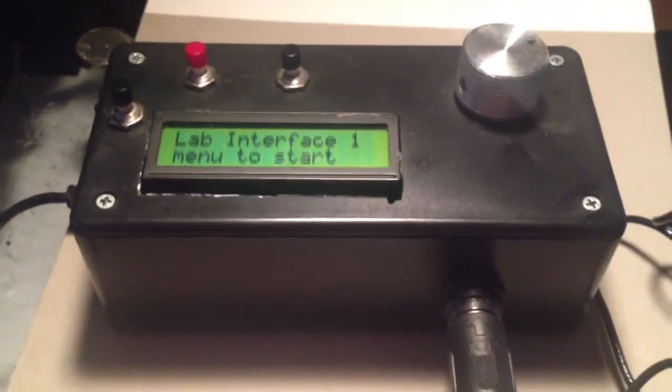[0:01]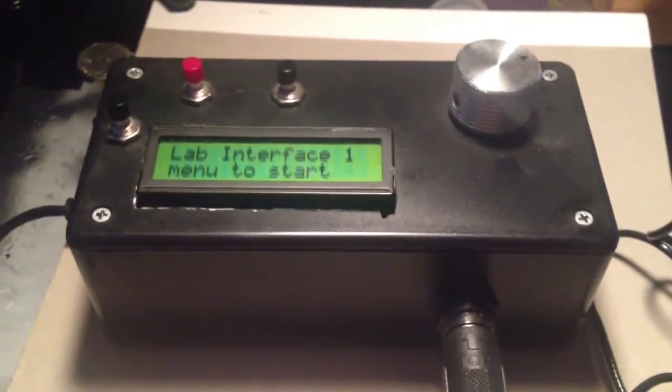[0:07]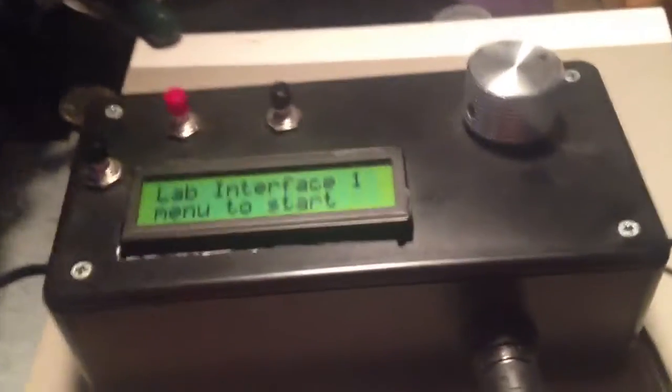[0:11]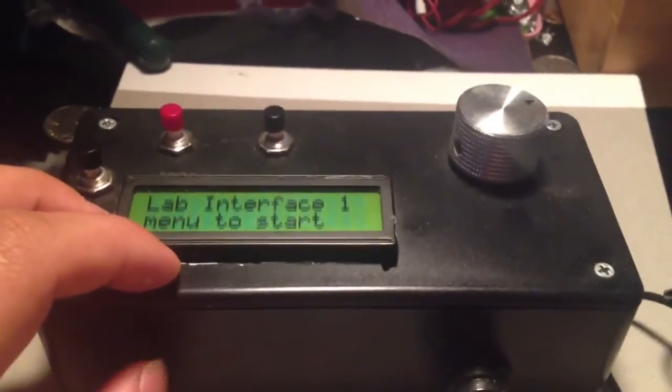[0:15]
So this is an Arduino pH meter that I made. It measures pH and can use other probes like EKGs, electrocardiograms. And so that's why I'm calling it a lab interface. Well, anyway, it's set up with two-point calibration for pH right now.
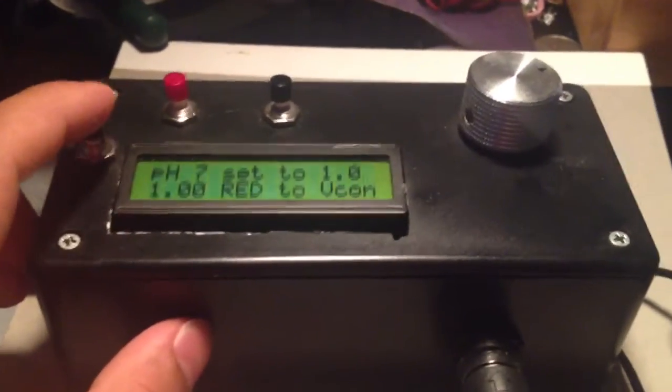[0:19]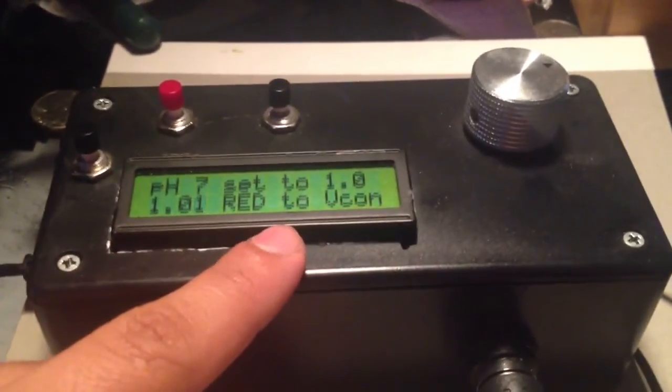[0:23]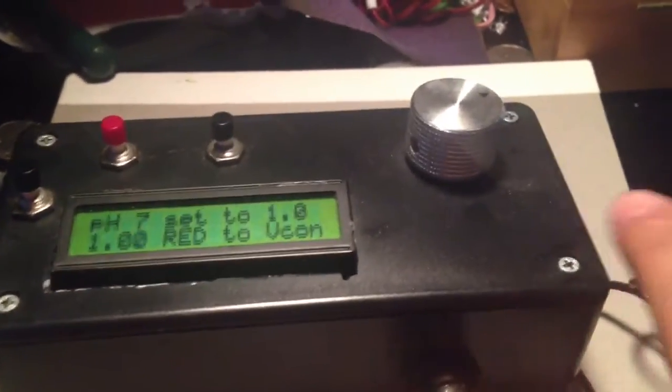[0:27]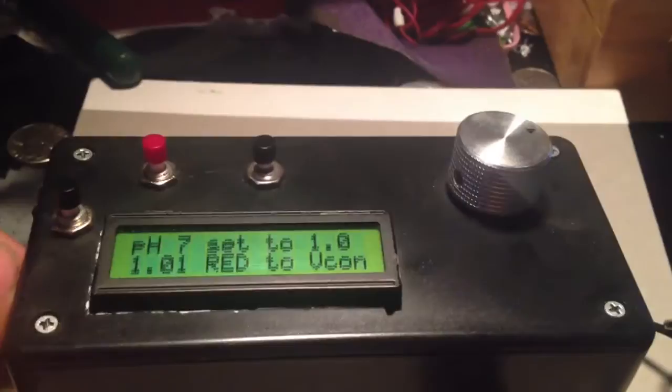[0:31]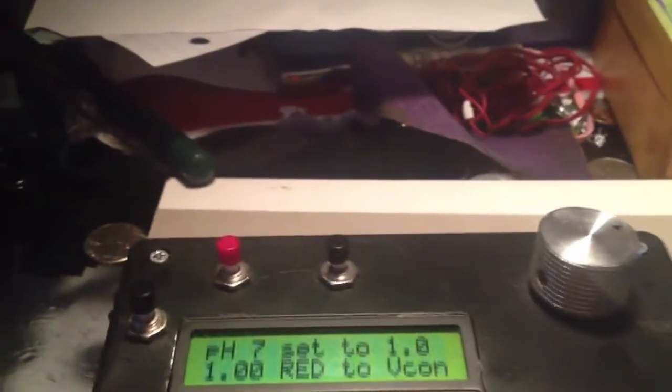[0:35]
So basically what happens is I press this button to enter calibration mode. Now it says pH 7 set to 1.0. You'll notice this number is fluctuating. I've already set it to 1. Right now the probe is in a storage solution. So that will take a reading so that you have a reference, because pH 7 is set to 1. It's just an arbitrary voltage.
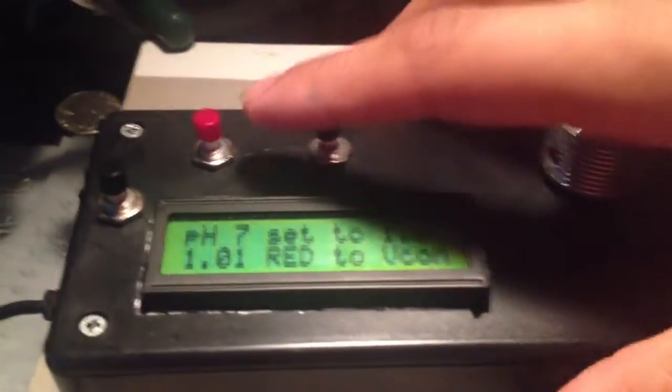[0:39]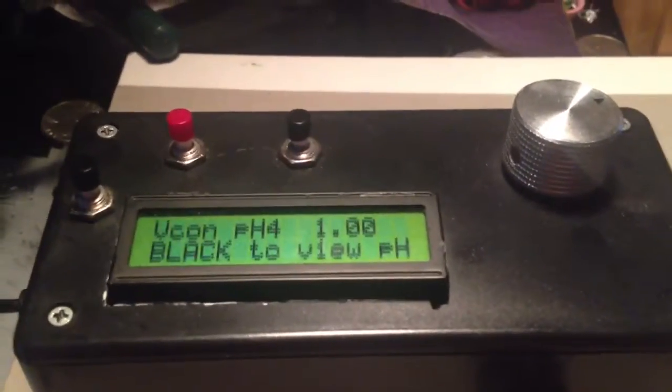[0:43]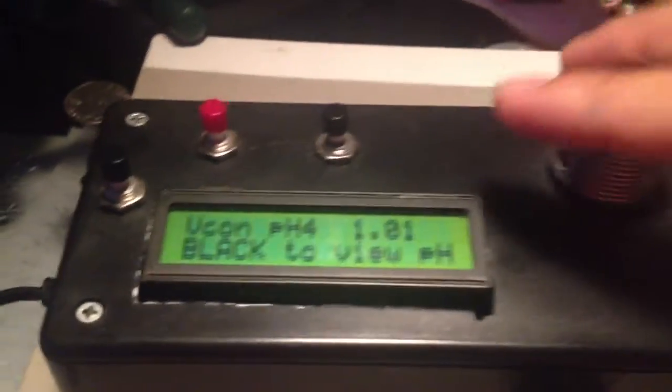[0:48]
Then press the red button, and what that does is you put it in a pH 4 solution, a buffer, and you wait for that number to stabilize. Once that's stable, you can press this black one to view the pH.
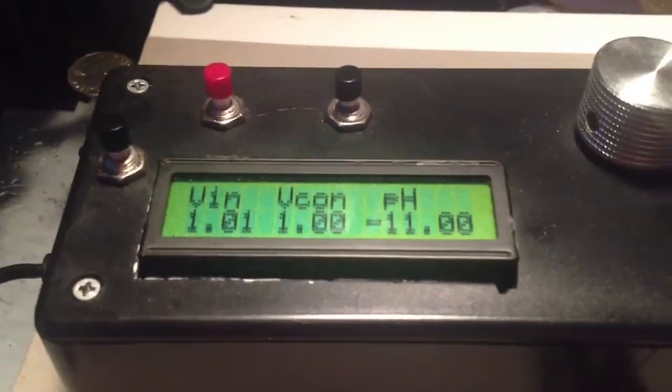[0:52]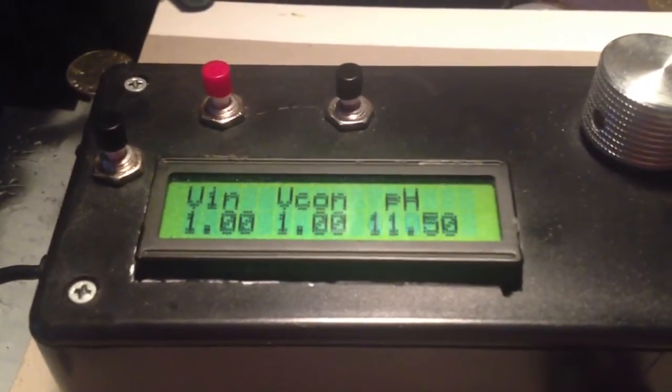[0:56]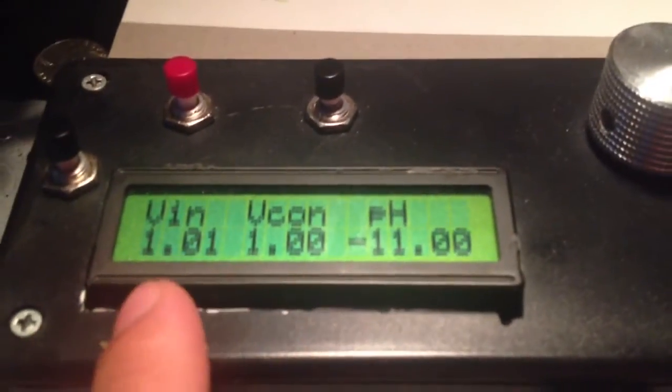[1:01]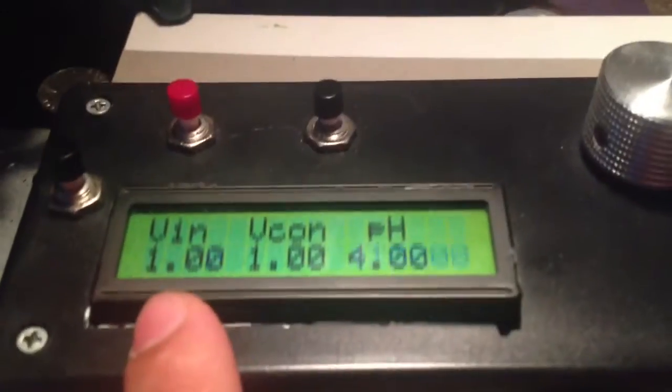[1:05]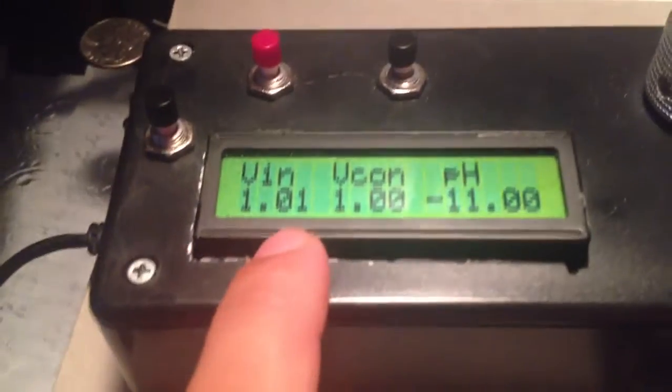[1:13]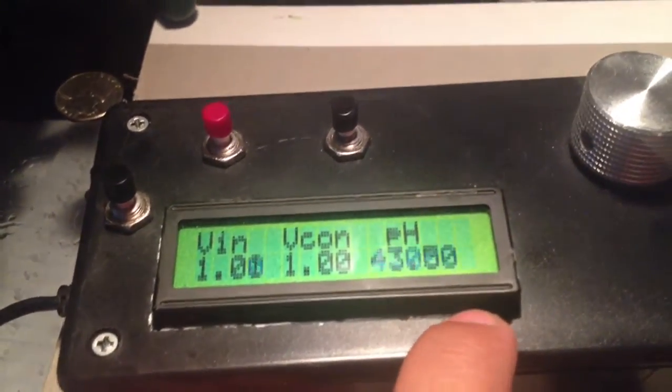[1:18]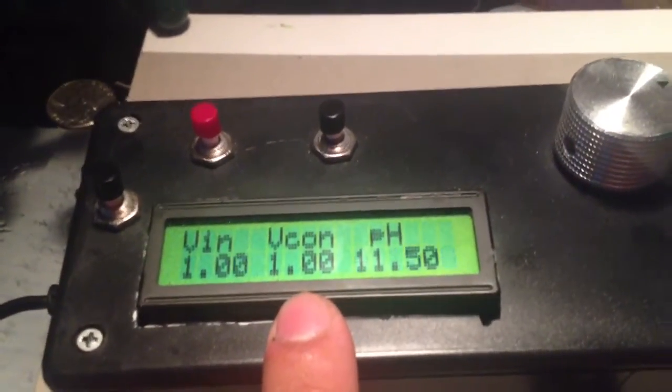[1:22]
What's happening is that the reason it's showing negative 11, 11.5, all that, is because the pH 4 buffer voltage is 1 and the voltage for pH 7 was set to 1, which means that the slope of the graph is very, very steep. So even a hundredth of a volt fluctuation causes a huge change in pH. Anyway, normally V constant would be about 1.5.
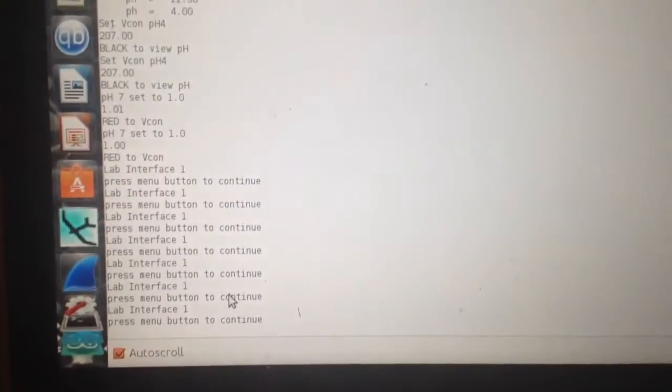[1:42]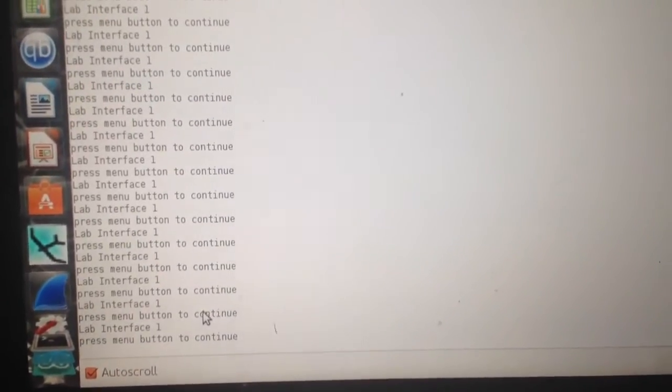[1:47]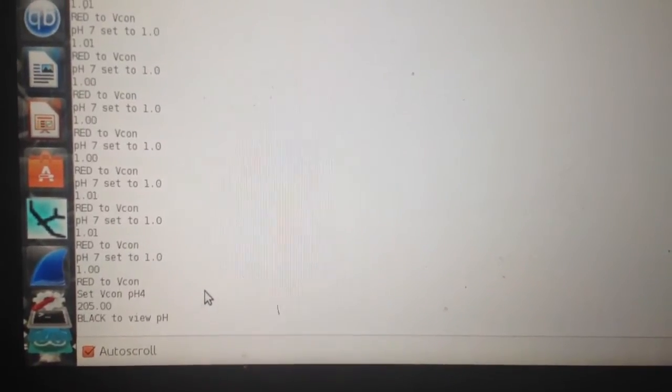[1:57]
So this is set up with Bluetooth. Right now it's not connected, and I'm just running it through a direct connection. And you can see on a serial port what happens. So let me just go back to the initial settings. You can see it says lab interface. Press menu to continue. Once you do that, it'll tell you to set the pH 7 to 1. And then once you press the red button, it'll set the VCon, which is the constant at pH 4.
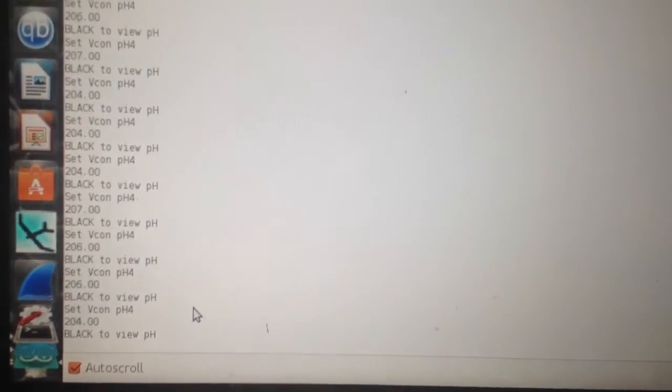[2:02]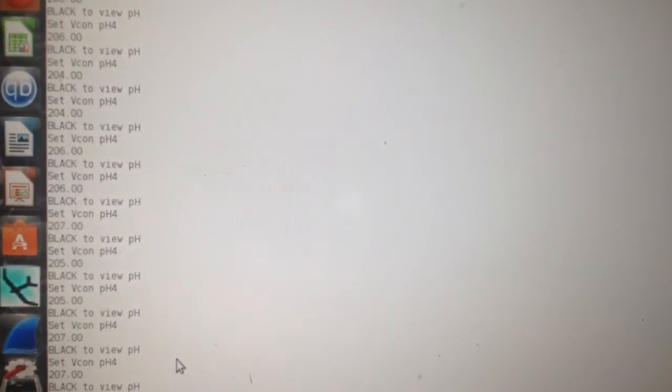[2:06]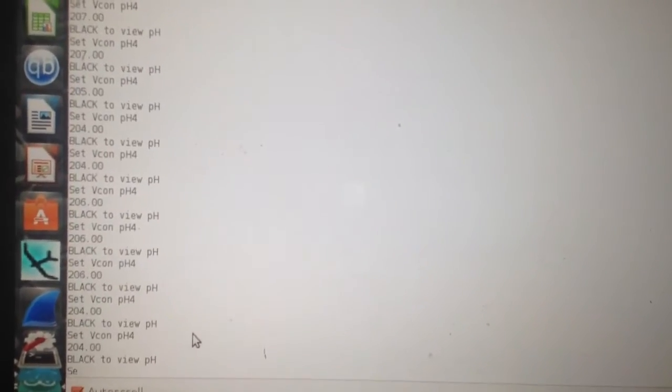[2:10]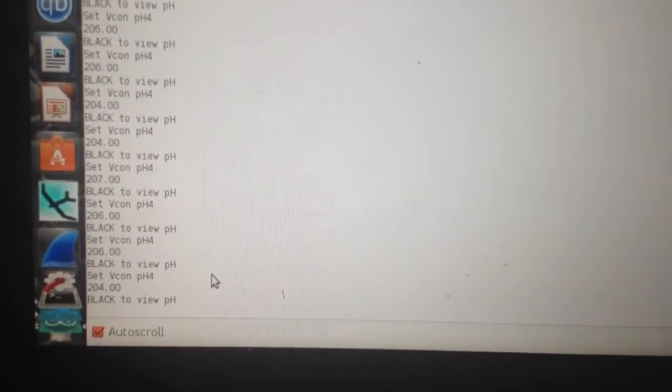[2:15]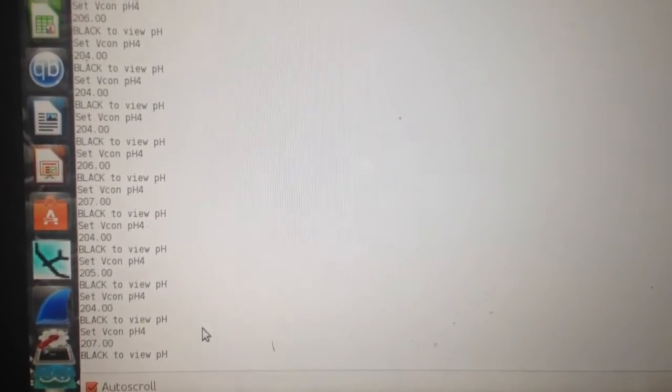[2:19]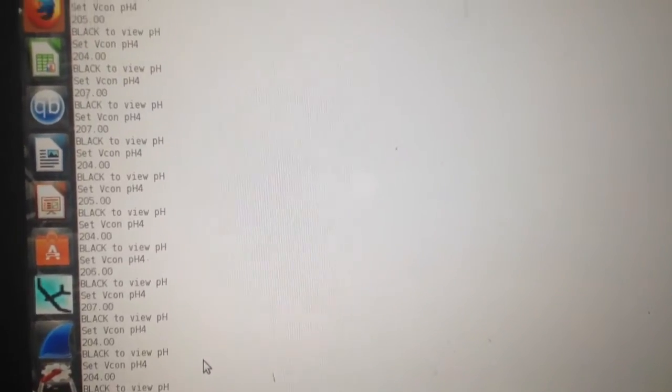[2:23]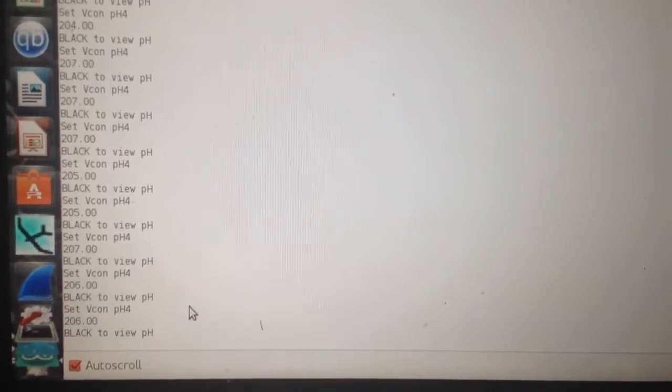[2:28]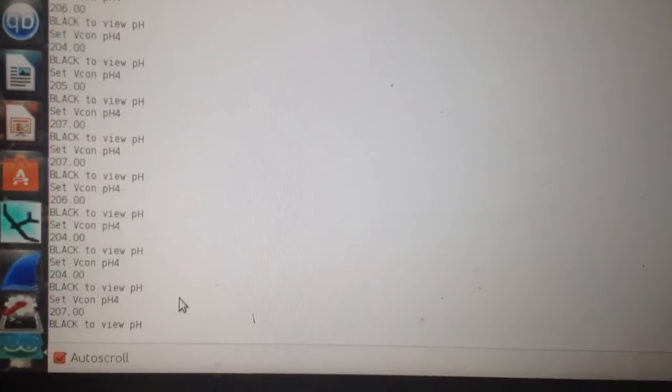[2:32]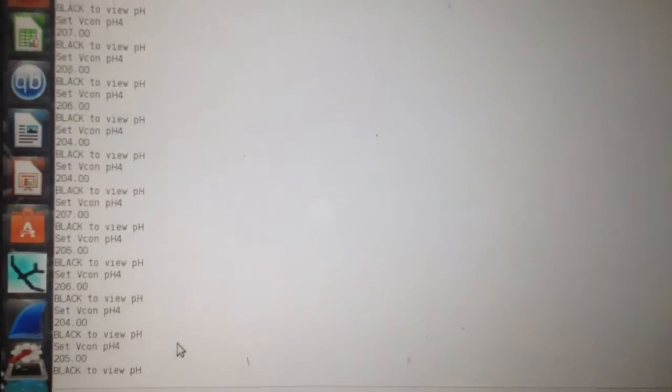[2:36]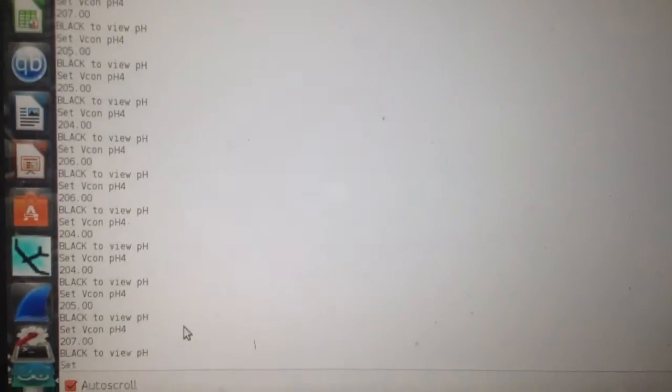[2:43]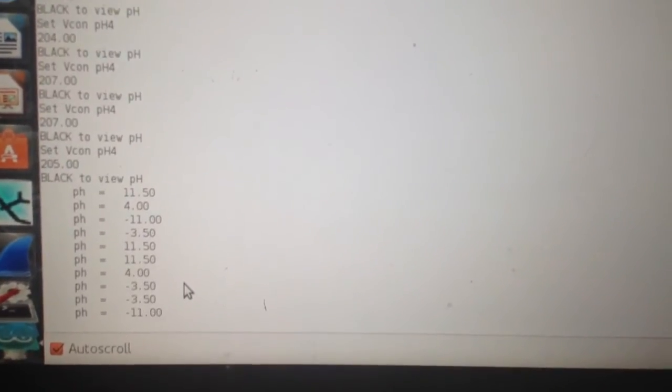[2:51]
Now the reason it needs a constant is because the pH amplifier that comes with the probe gives out a linear change according to pH, even though pH is a logarithmic function. So then you need two points to create a slope and an intercept. I'm using 1 volt for pH 7, which was why you had to set it to 1 in the pH 7 buffer, and then some arbitrary value alpha for pH 4. So alpha is a constant that is acquired by pressing the red button. When you press the red button, it sets that constant, and then it uses the live signal to calculate pH. Then you can go to the next button and it'll actually display all the pHs.
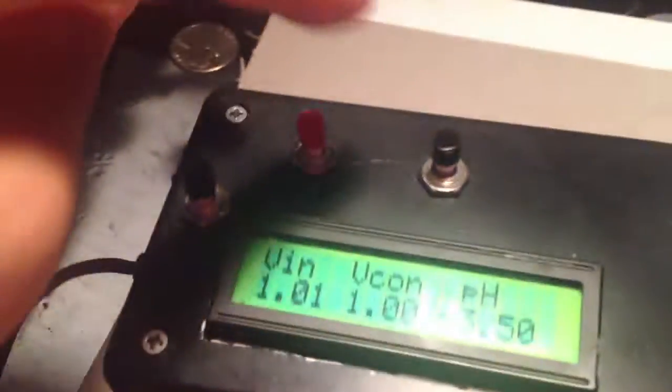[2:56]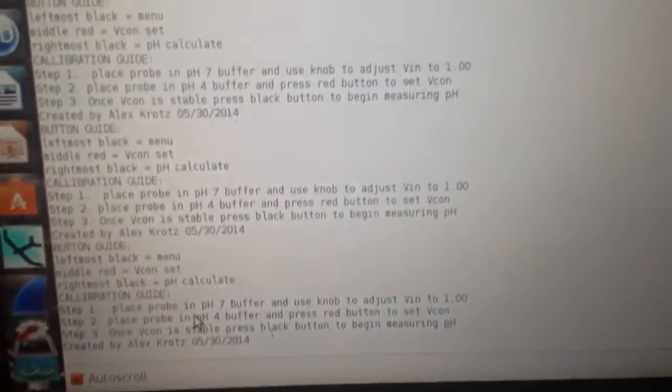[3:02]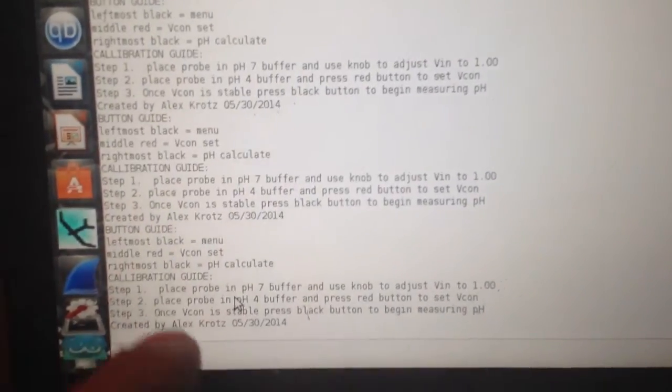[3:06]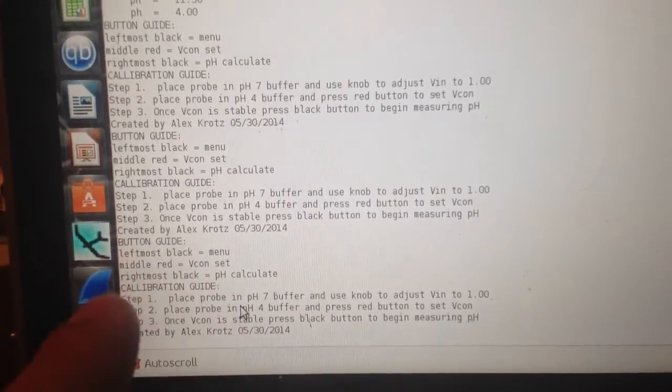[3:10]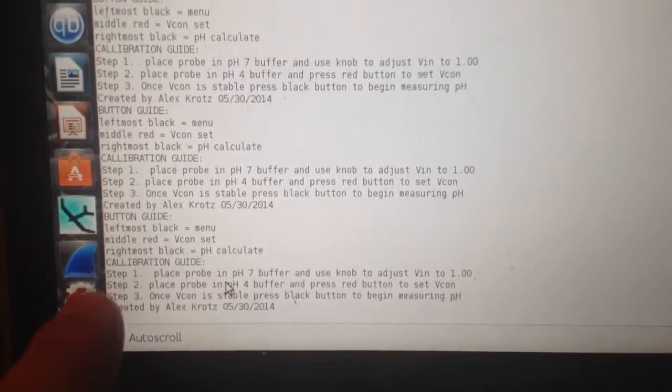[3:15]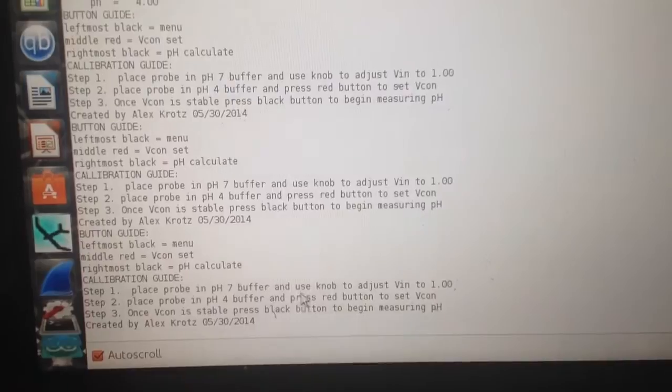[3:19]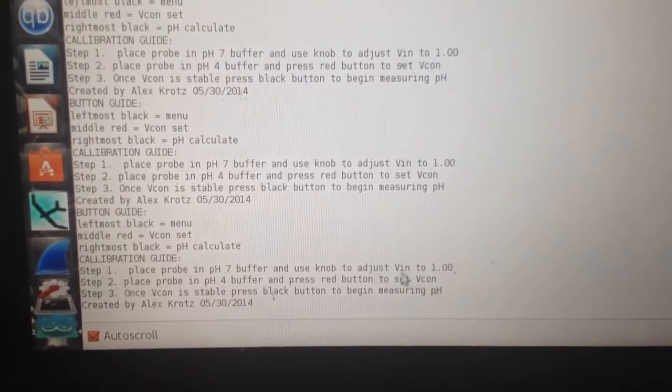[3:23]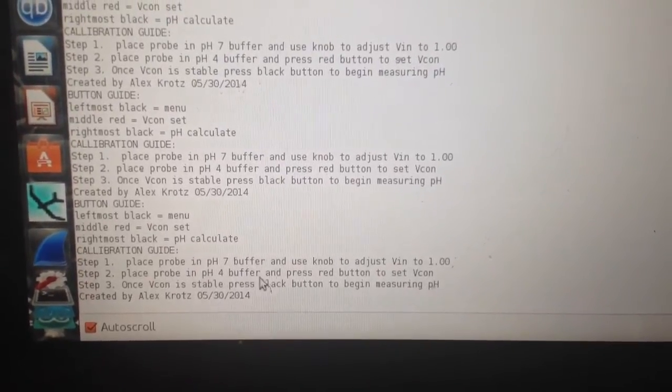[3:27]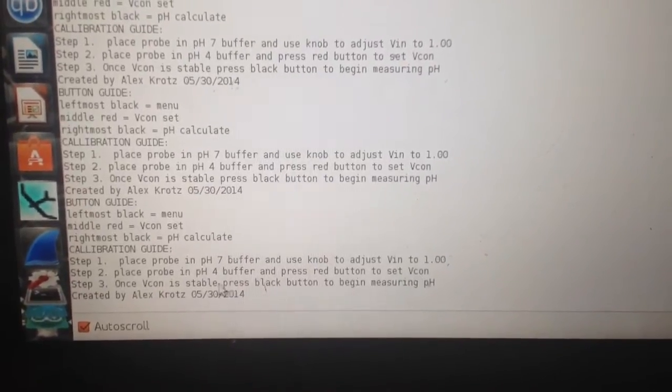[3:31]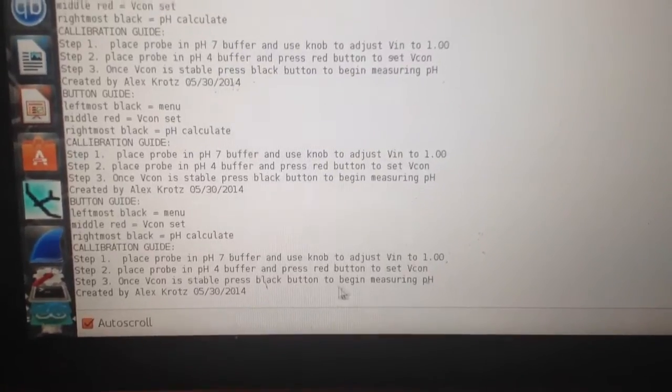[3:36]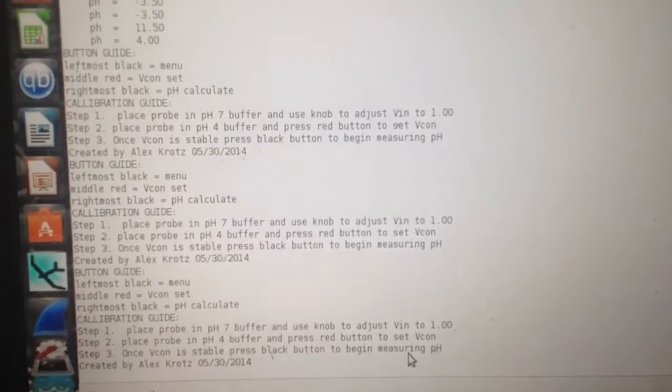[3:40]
One cool feature I added is that after you've pressed all those buttons, if you press the red button one more time, it goes into pause mode, but it also gives you a button guide and a calibration guide. It'll tell you the leftmost black button is the menu, the middle red is the VCon set, the rightmost black is the pH calculate button. Then the calibration guide: place the probe in the pH 7 buffer and use a knob to adjust volt in to 1. That's the raw voltage. Then place the probe in pH 4 buffer and press the red button to set VCon. That's, as I said, the voltage at pH 4. Then once VCon is stable, press the black button to begin measuring pH. And then it gives you the VCon, the VIn, and the pH.
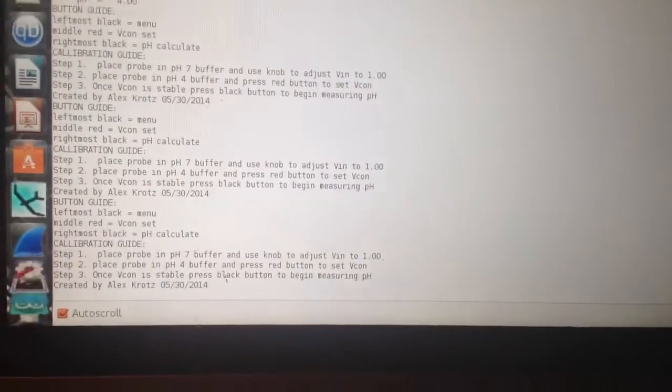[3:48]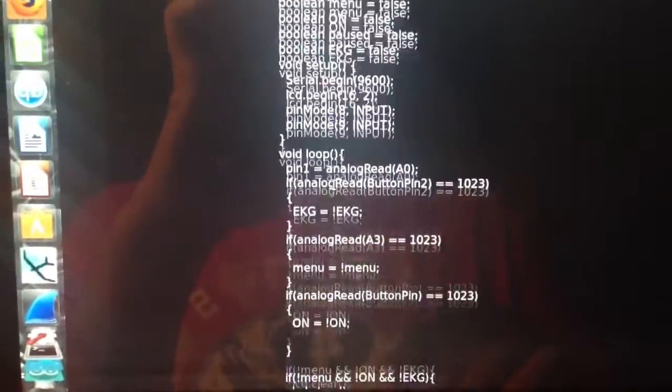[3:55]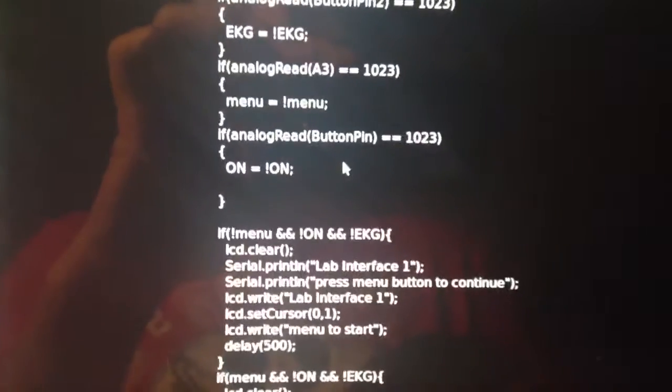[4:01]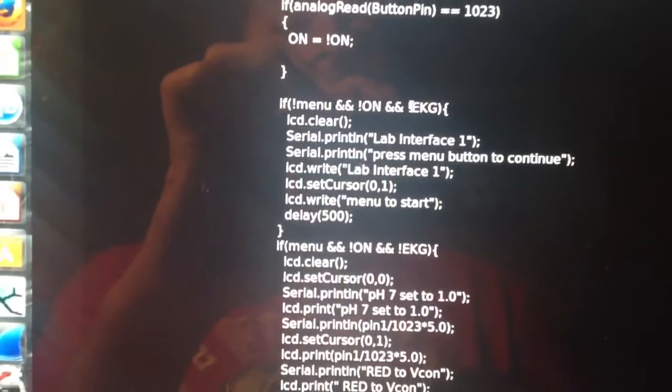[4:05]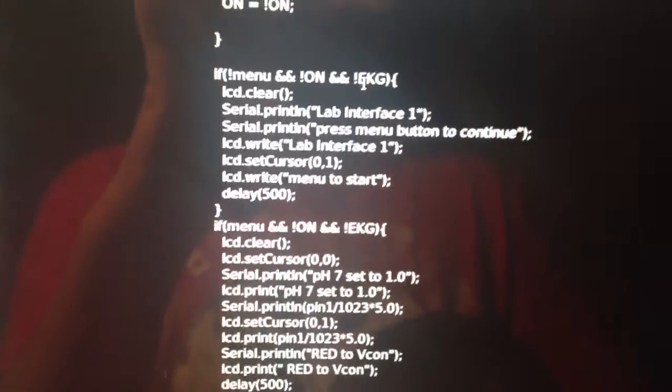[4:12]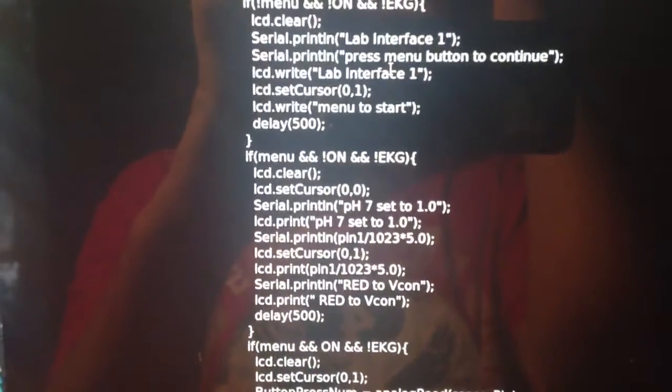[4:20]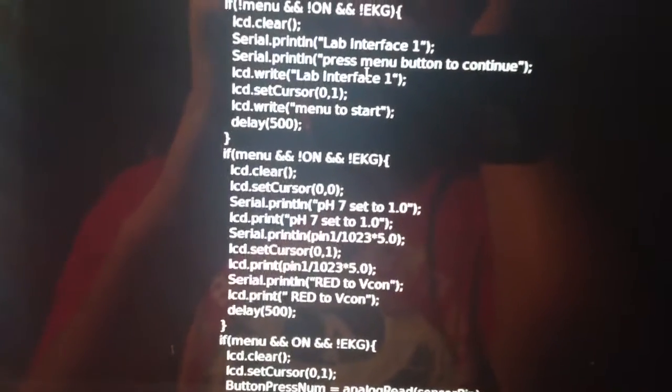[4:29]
So the code for this is pretty simple. Basically what's happening is that it's setting up booleans so that you can use the momentary switches as toggle switches. As you can see here, I have three booleans: menu, on, and EKG. EKG was just a leftover from the prototype programs. Then it'll give you different options depending on the button set. Because I have three booleans, I can have 8 combinations. Right now I'm only using 4 combinations. So that gives me other possible programs that I could use depending on the buttons.
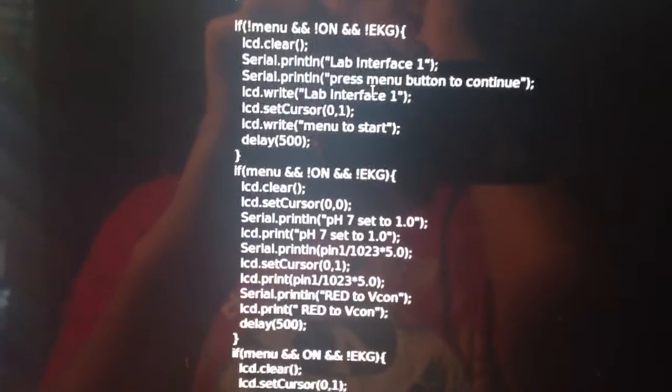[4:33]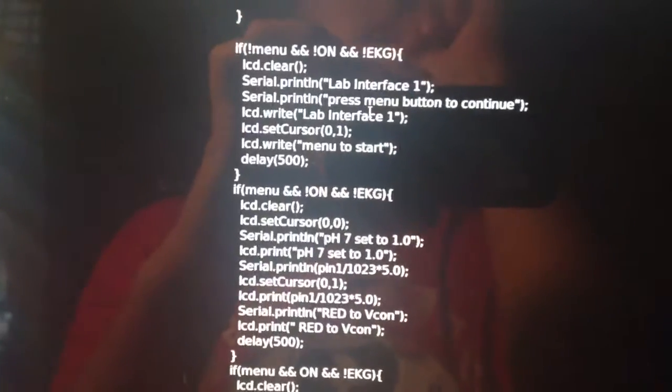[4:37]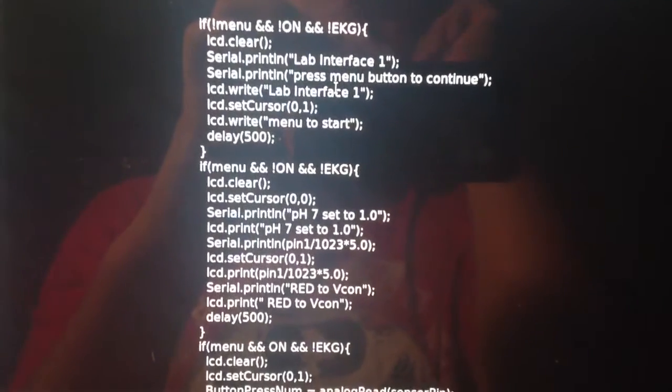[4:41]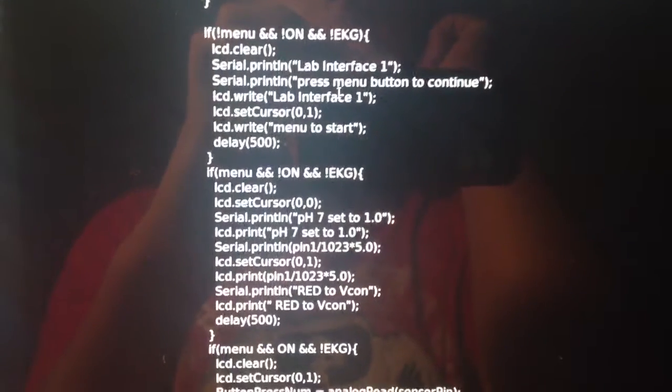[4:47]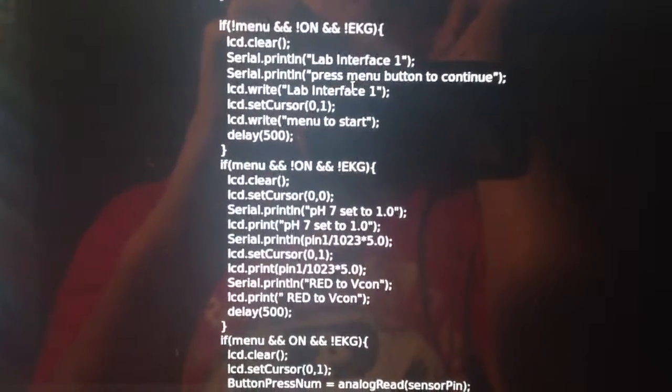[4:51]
For example, I could set it so that when only the last two buttons are pressed, it goes into another program that will graphically display the data. That you probably couldn't do with Arduino programming, but if I connected it to Python, then I could run that, or Java. So yeah, that's pretty much it.
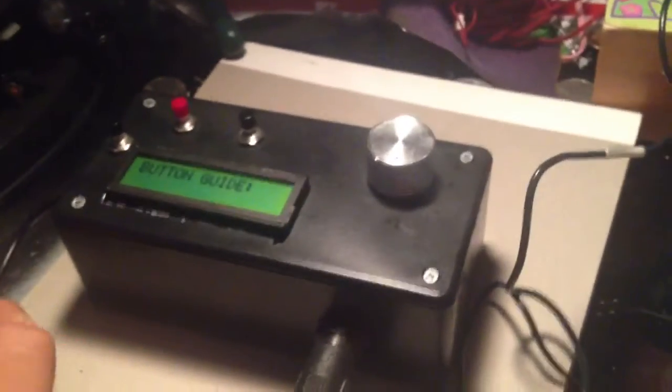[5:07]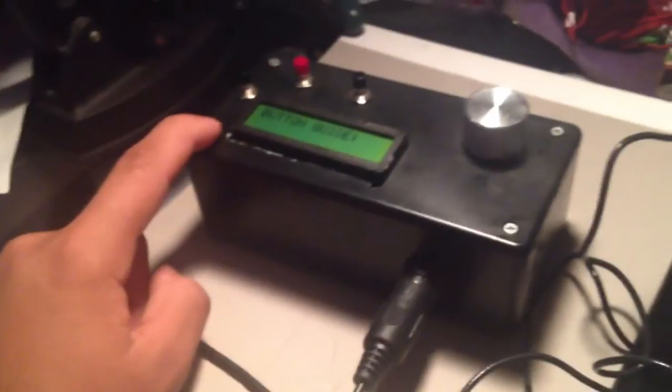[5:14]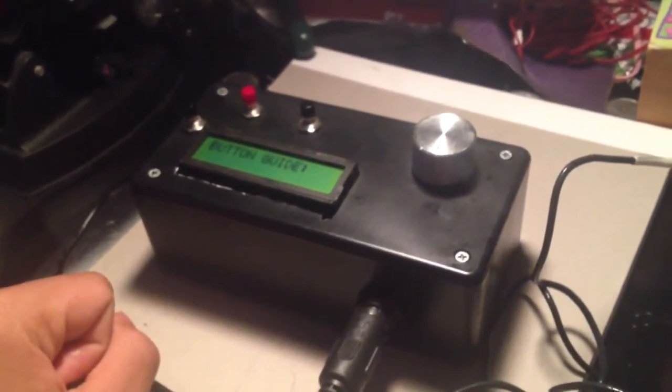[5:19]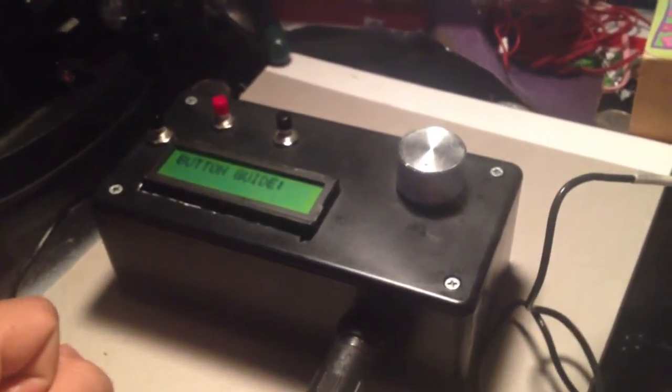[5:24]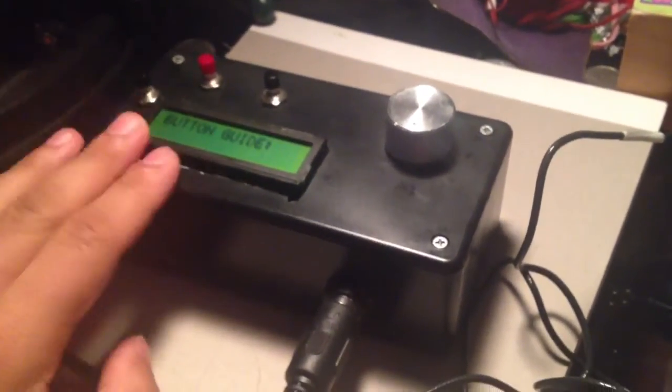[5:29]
The insides are really messy; wire management is difficult on this because of how compact it is. The Arduino I'm using is an Uno, but it will also work with a Micro. It has a 9-volt battery inside, which it drains quite quickly. I think it's because the Arduino's voltage regulator is not very good. It's taking 9 volts, but it's using only 5 volts of that. So you're losing almost half of your voltage there. Anyway, those run out in about a day if you're using it.
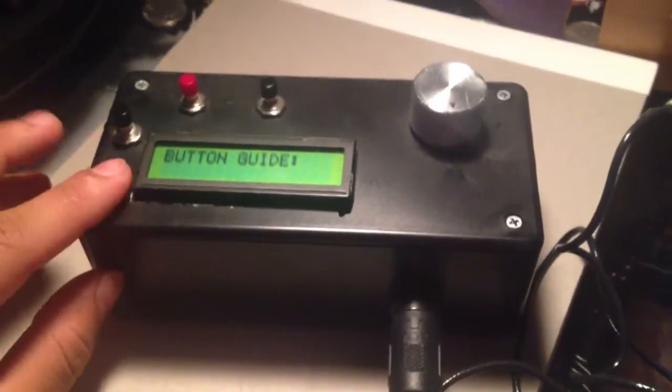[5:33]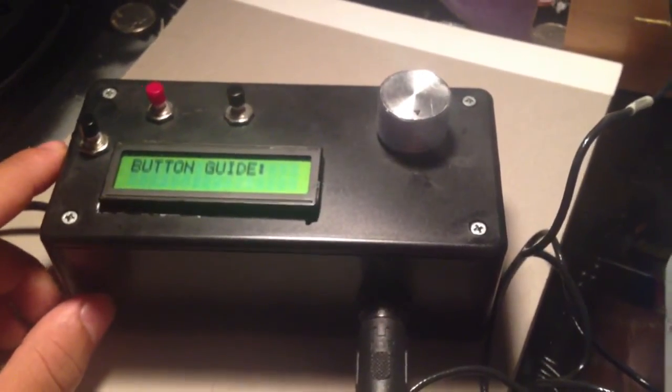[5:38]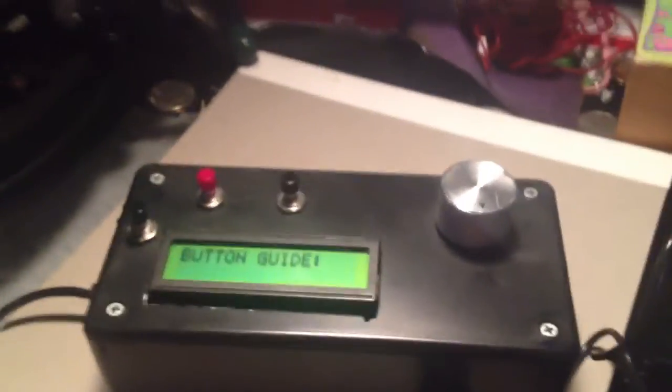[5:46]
I hope to set up more sensors, like there was an O2 sensor, and I think there was a nitrate sensor too. Those will be useful in aquaponics or hydroponics.